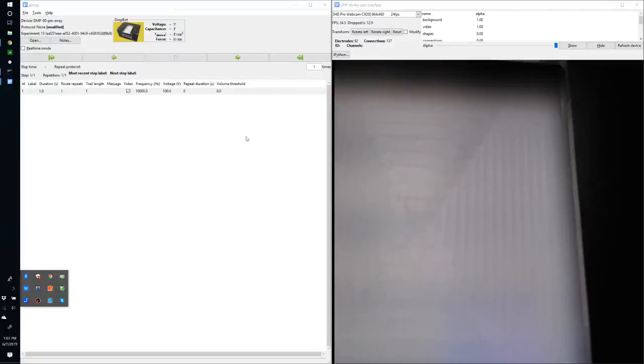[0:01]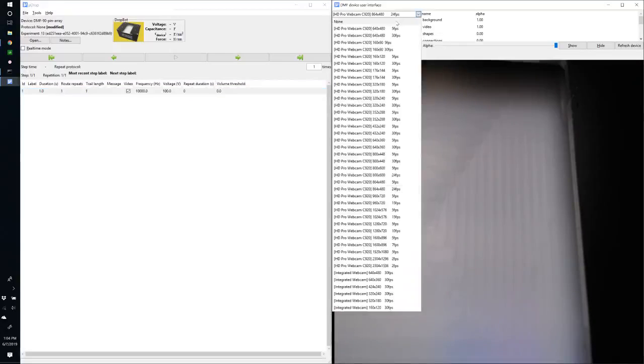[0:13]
In this video, I will be demonstrating how to align the webcam feed to your chip after inserting it into the DropBot. So the first thing to do is to make sure that you've got your webcam selected in the drop-down menu. Note that the webcam must be plugged in before launching MicroDrop or it won't show up in this list. And you can select your resolution according to your CPU speed.
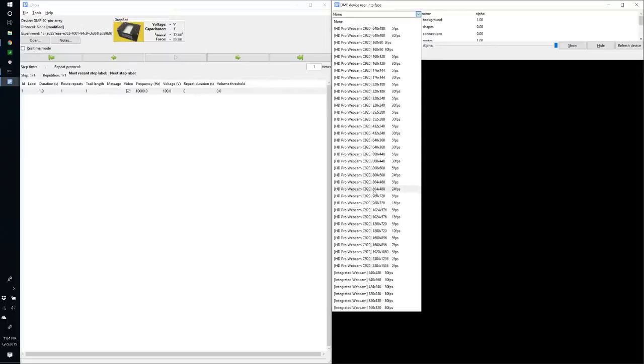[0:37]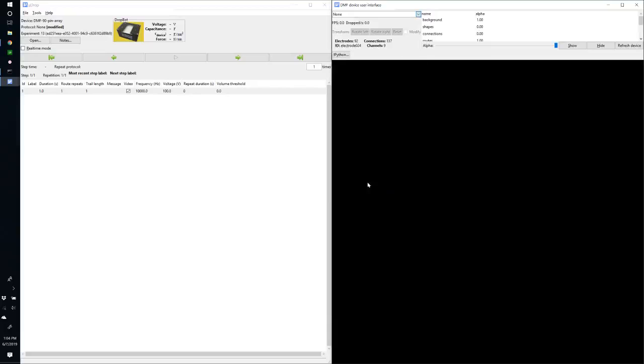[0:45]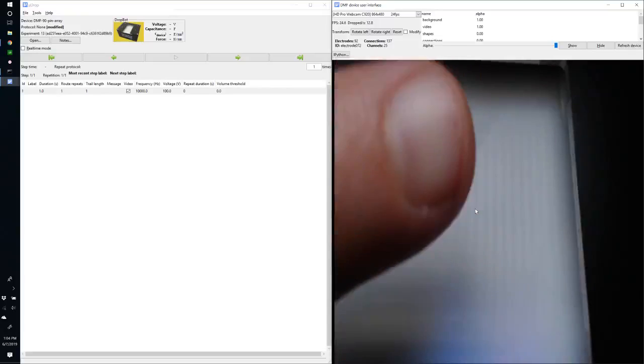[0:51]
On my system I usually pick 864 by 480. If you've got a faster CPU you might be able to get away with higher resolution, but for this example we'll use 864 by 480. So this is showing a live feed now of my DropBot, and I'm going to insert one of my chips,
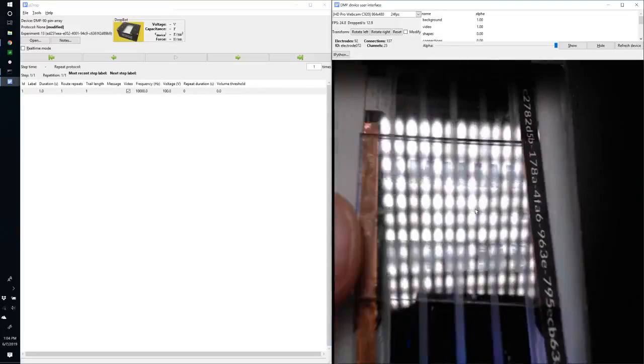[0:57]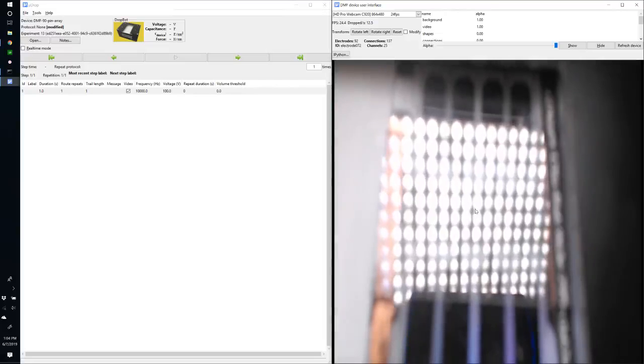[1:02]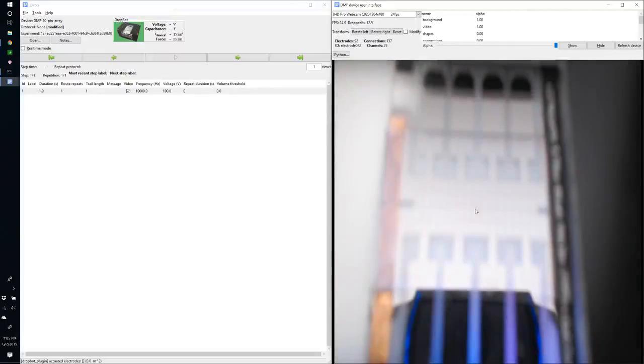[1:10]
and then you insert the device spacer underneath so it makes contact with the pogo pins. And I just have a white piece of plastic. You could use a white piece of paper as well to give yourself a nice surface to reflect.
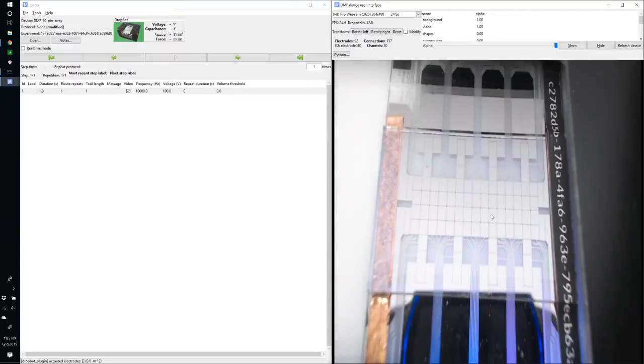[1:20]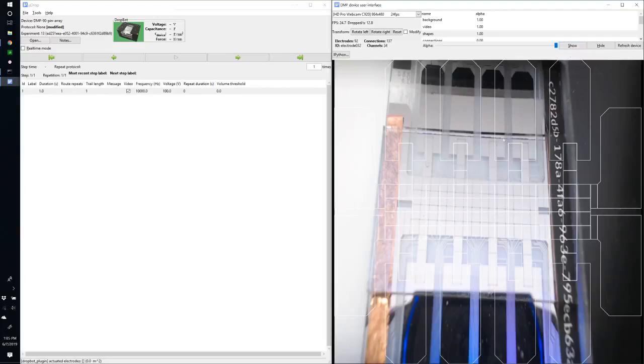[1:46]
Because the chip is so reflective with the chromium layer, it helps to have an even background positioned against the camera so that you get a nice even lighting across the chip. Now once you've got that, make sure that you've selected the shapes layer of the UI and show them over top. The goal here is to align the webcam feed so that it lines up with these electrode shapes.
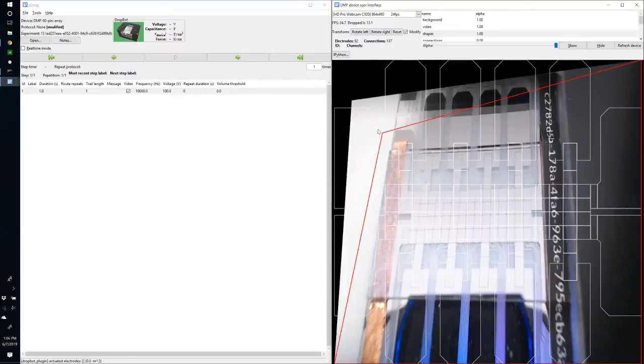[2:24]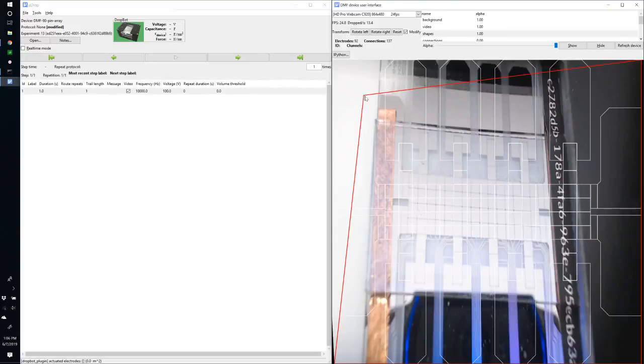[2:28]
To do that, we click on Modify, and then you'll see this red box around the outline. From there, you can click a point on the video, and clicking will bring the nearest corner of the red box to your mouse cursor position. So if I click, you'll see we brought the closest corner to meet that position. And if you click and drag, you can drag the video to move that position around. So that acts as an anchor.
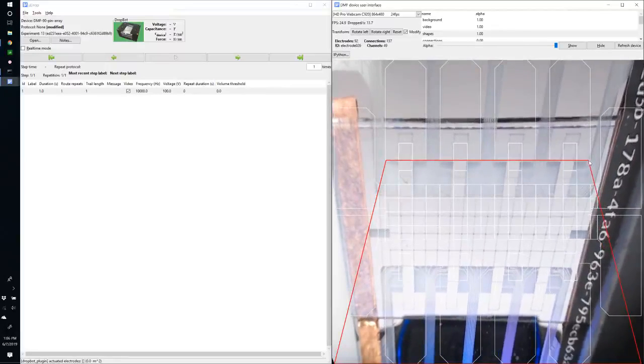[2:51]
In this example, we want to pick something that is easily identifiable on the chip, such as the corner of an electrode, and match it up with the corresponding position on the electrode drawing. And then we can click to get closer to another electrode, and then repeat the same process. So here I'm going to match up that corner with the corresponding corner of the electrode drawing.
One thing to note: if I intended to move this corner of the video and I clicked here instead, I may accidentally move the wrong corner of the red box. Then you can press Ctrl Z to undo the most recent move. And that allows us to click closer to the corner that we intend to move.
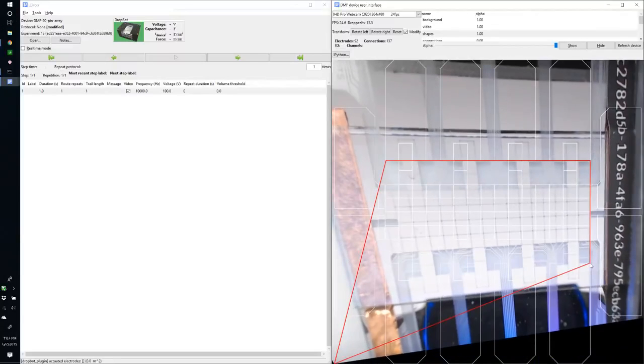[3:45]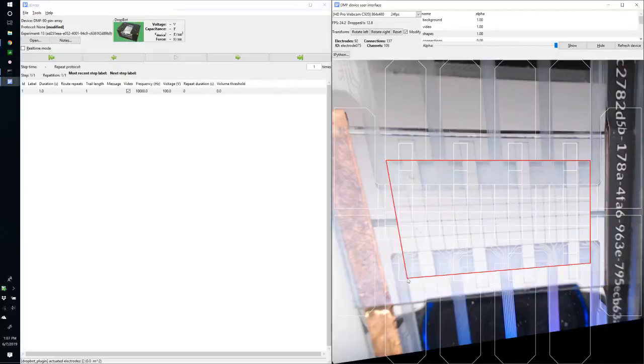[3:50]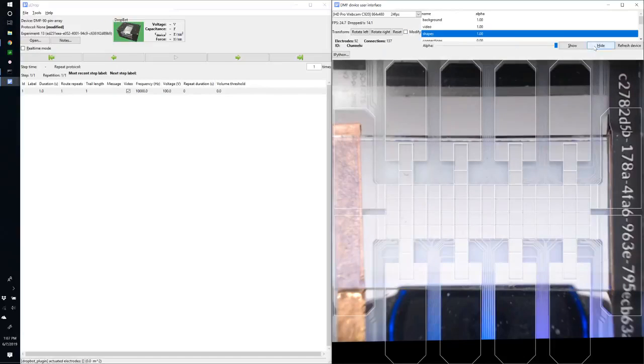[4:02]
And if it's ambiguous which corner is closer, you can make multiple clicks. So for instance, if I want to make sure that I'm modifying this corner to this electrode, I can click several times to bring it closer, and then click and drag and align it with its corresponding electrode corner. And I'm going to perform the same thing here to align that corner. Once you're done, you can click the Modify checkbox to uncheck it, and then
you can optionally hide the electrode shapes. So that's just the electrode outlines. If you click on an electrode, it will still show an actuation overlay, white in this case. Those are the static electrodes. By default, the opacity is 70%. You can turn that up or down according to your preference.
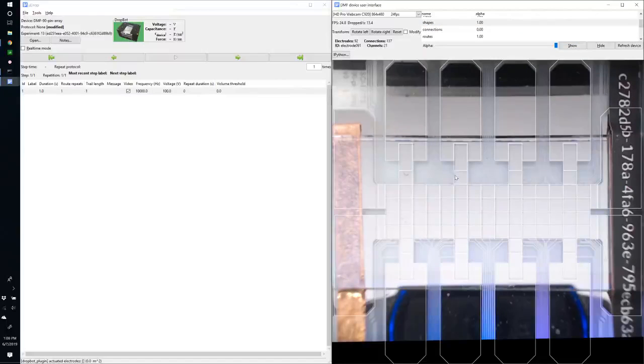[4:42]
So there we've demonstrated how you can align the webcam feed to the shapes of the device that you're working with.